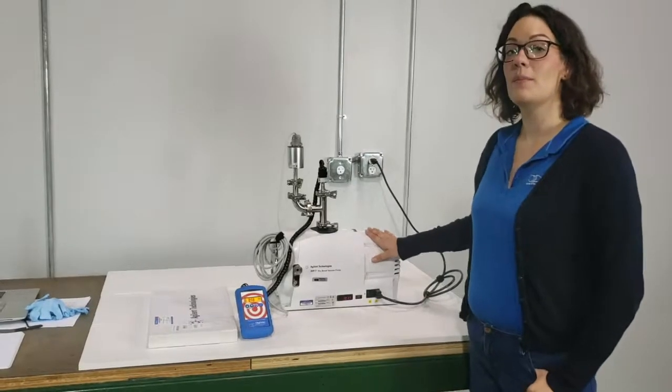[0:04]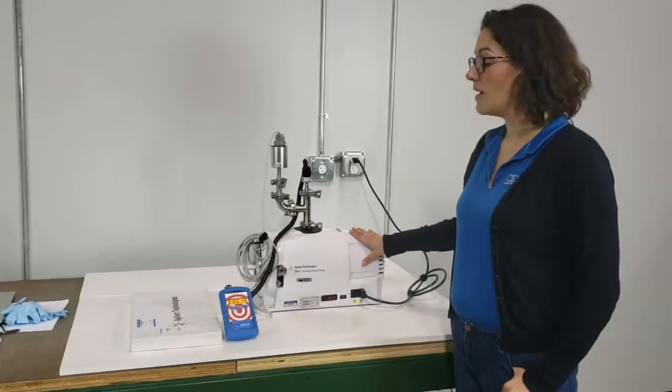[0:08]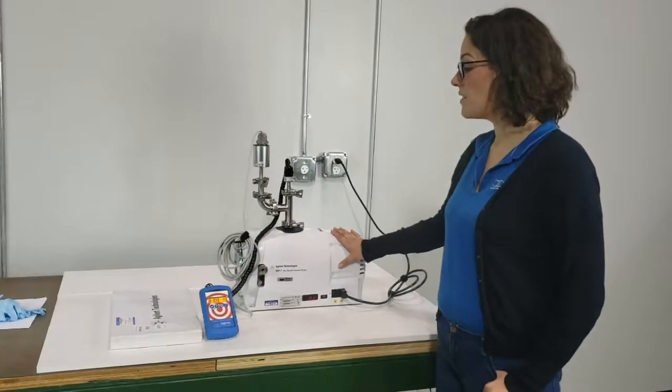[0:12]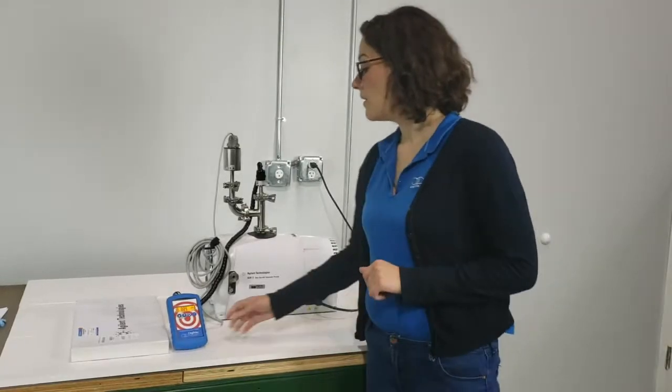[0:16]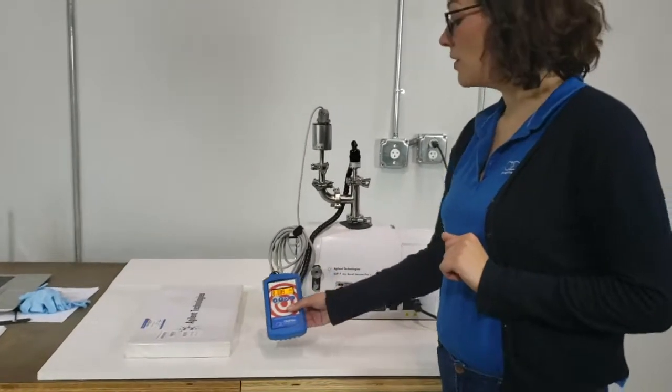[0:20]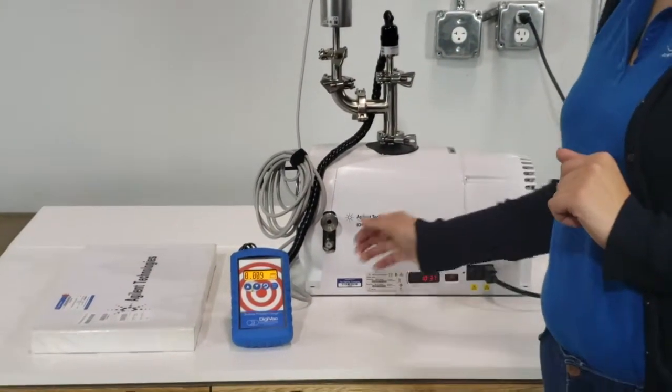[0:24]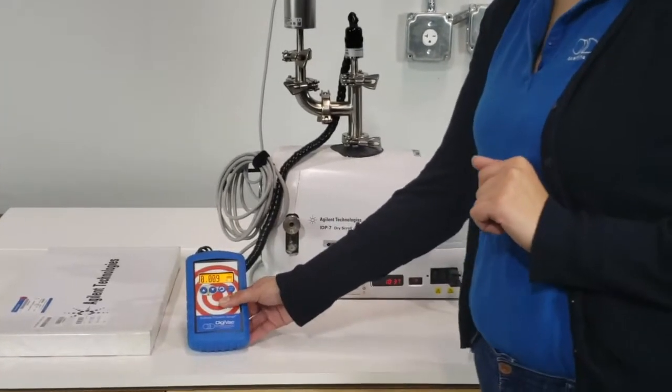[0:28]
I'm the lead calibration tech at the DigiVac company, and today I'm here to demonstrate how to replace the tip seal in the Agilent IDP-7 dry scroll vacuum pump. As you can see, we have our DigiVac bullseye precision gauge hooked up to the pump, which has been running for approximately 10 minutes, and we've achieved a base pressure so far of 9 millitorr, which is very good.
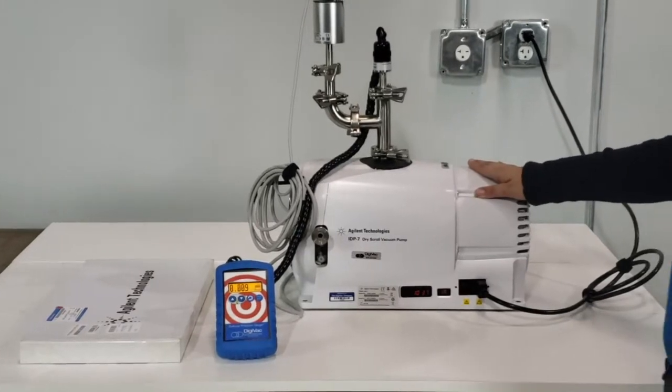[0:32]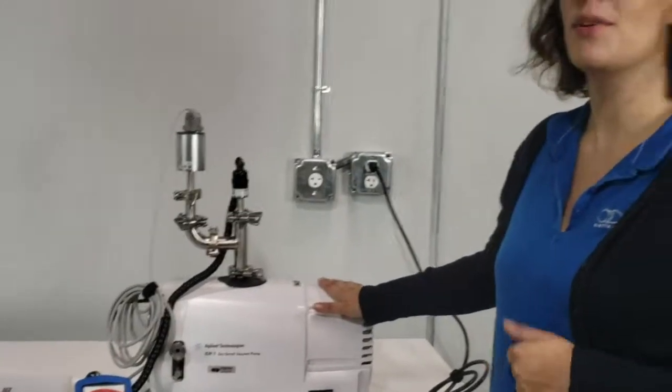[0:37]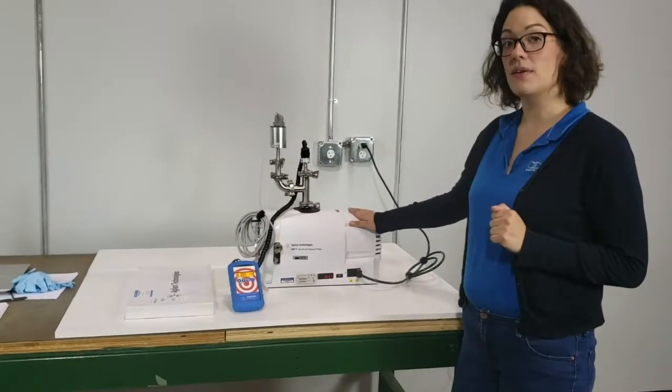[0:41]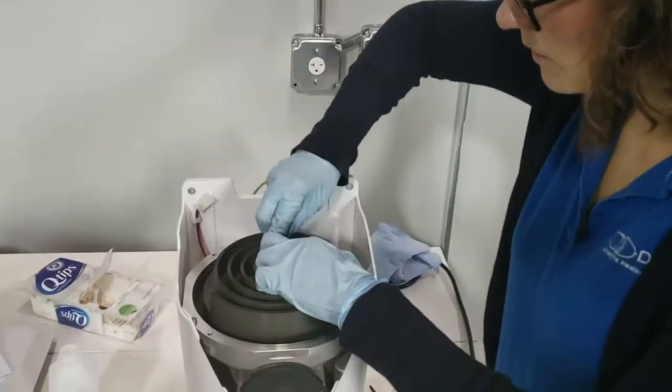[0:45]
This pump is DigiVac property, which we use for testing in our facility. It does not necessarily need its tip seal changed, but we like to demonstrate for your benefit. We recommend this standard maintenance approximately once every 2 years for consistent use.
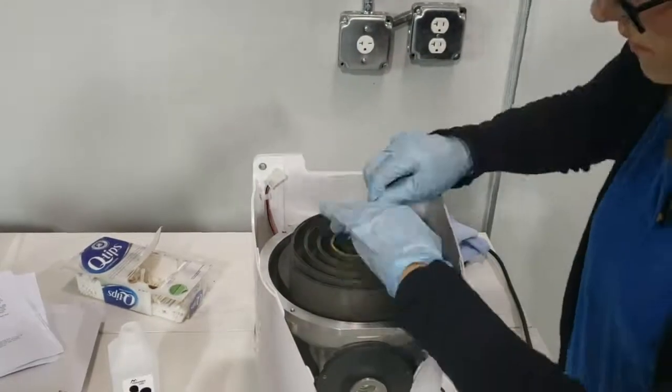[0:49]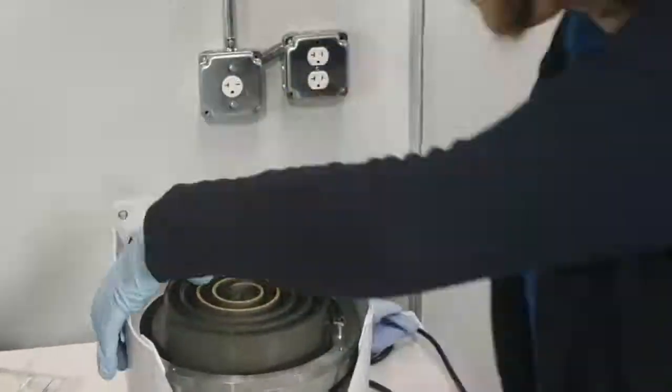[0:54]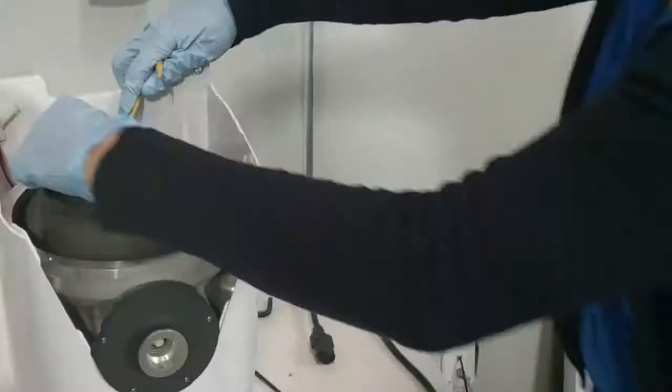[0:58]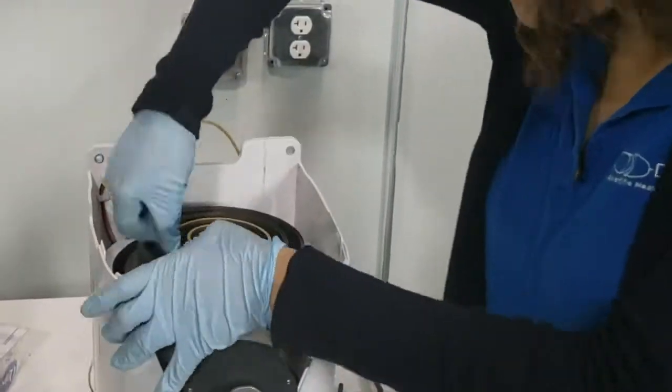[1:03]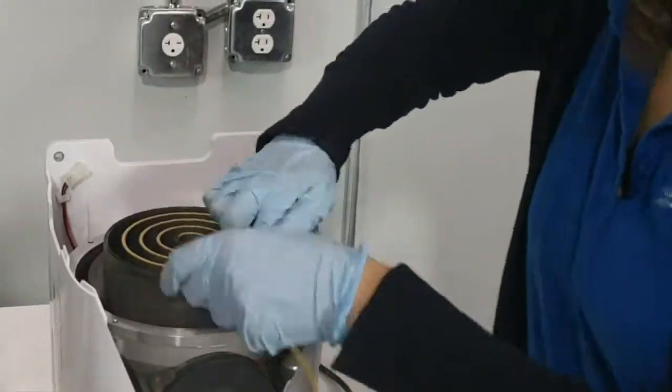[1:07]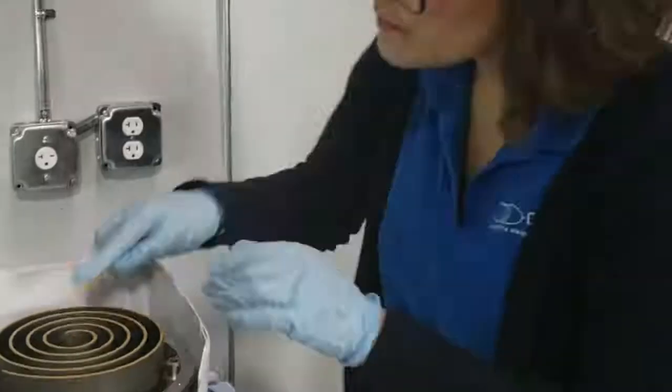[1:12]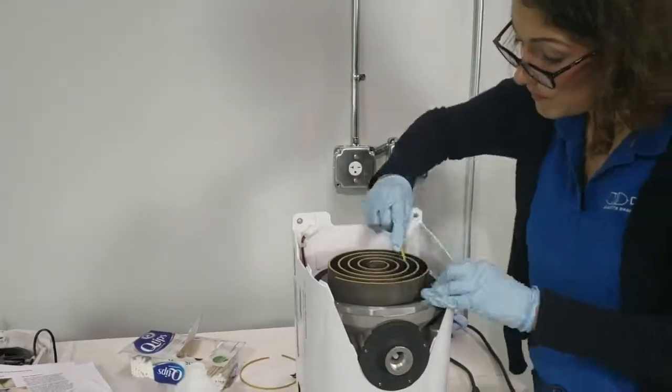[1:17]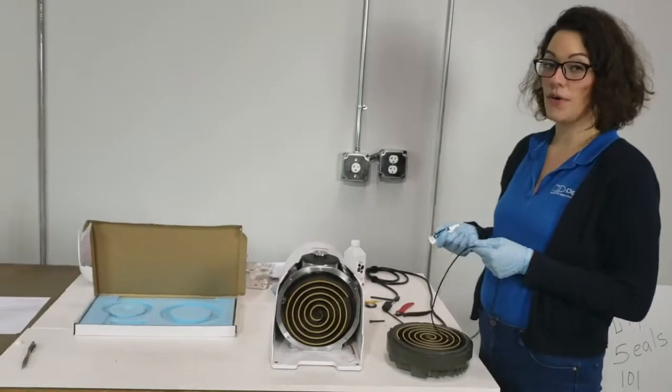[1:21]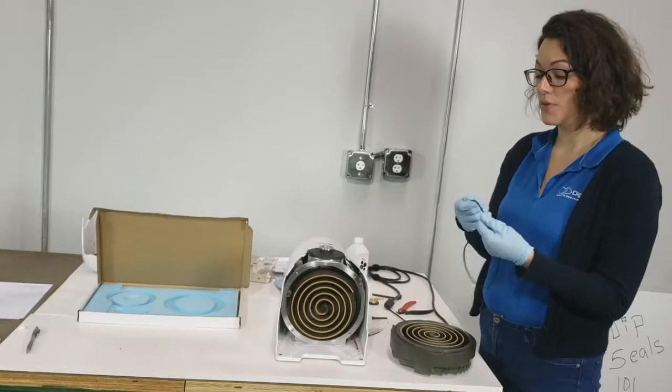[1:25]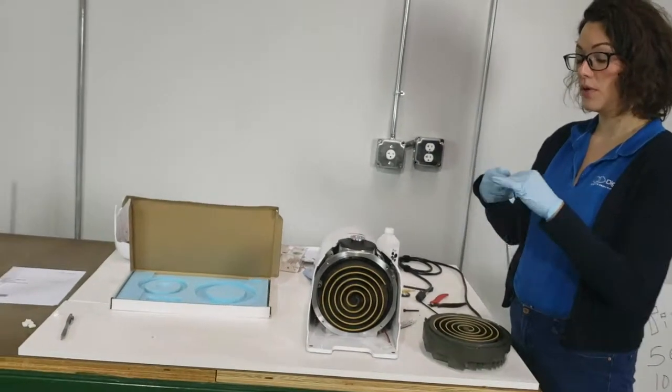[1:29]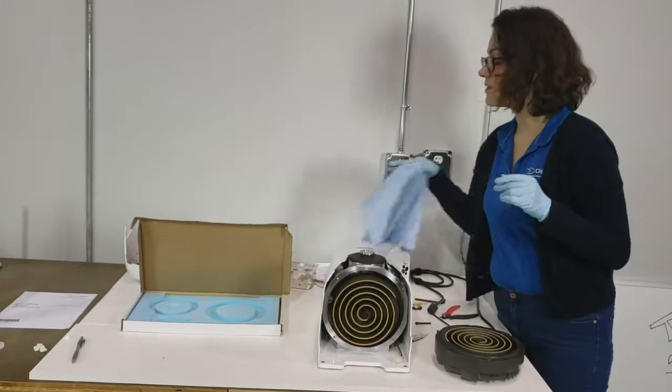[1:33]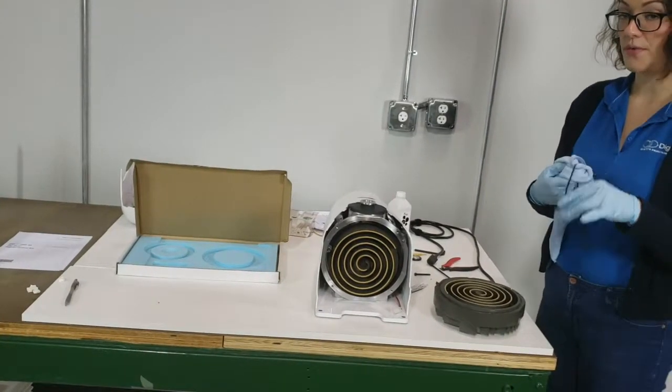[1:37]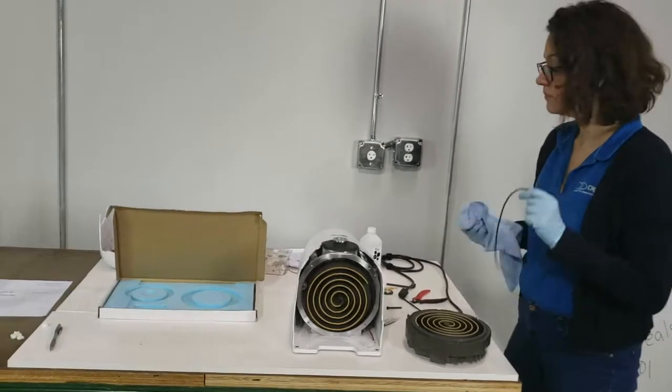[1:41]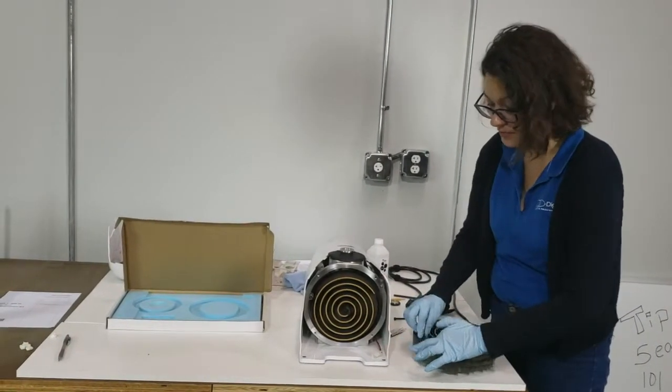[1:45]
So we'll grease the O-ring very slightly with the provided grease. Just work a bit between your fingers, pull it along the length of the O-ring, and then go over the surface with a lint-free cloth just to leave the surface slightly shiny. Then we can lay the O-ring in its groove.
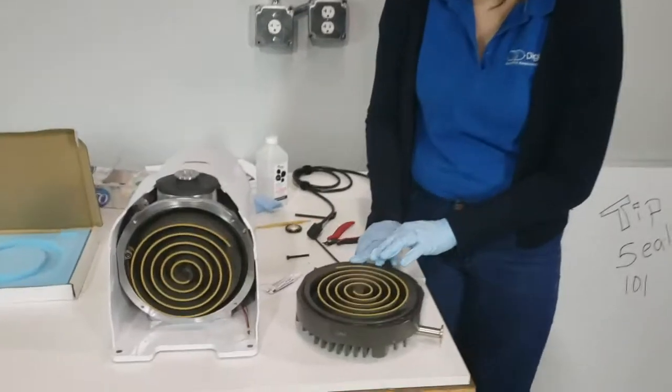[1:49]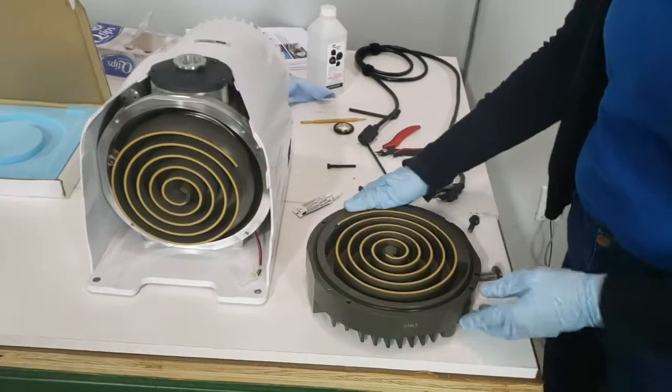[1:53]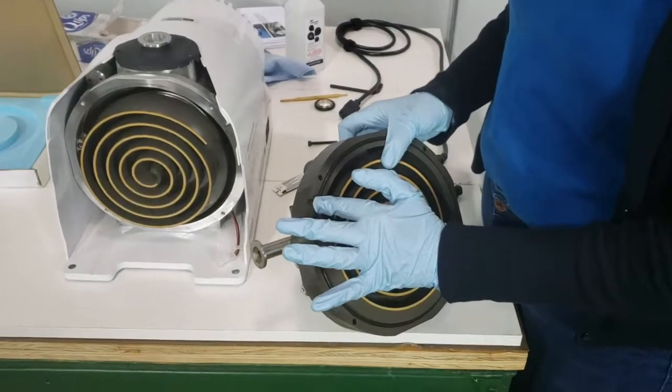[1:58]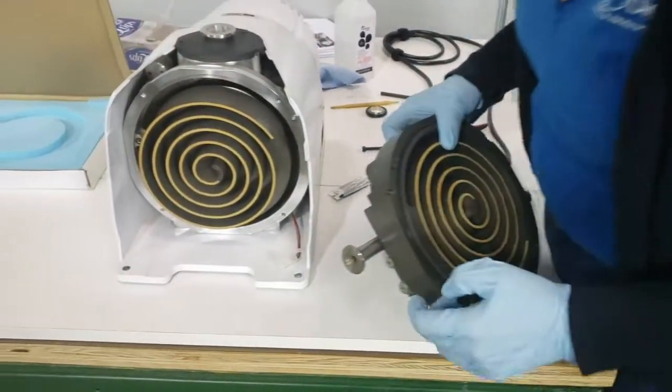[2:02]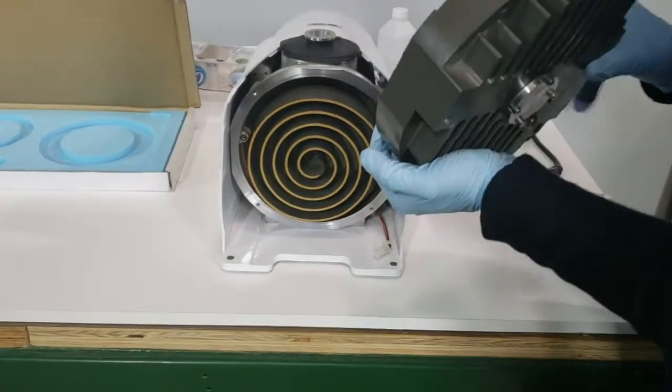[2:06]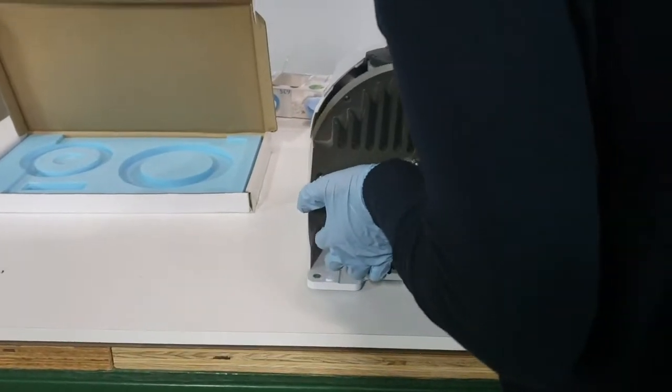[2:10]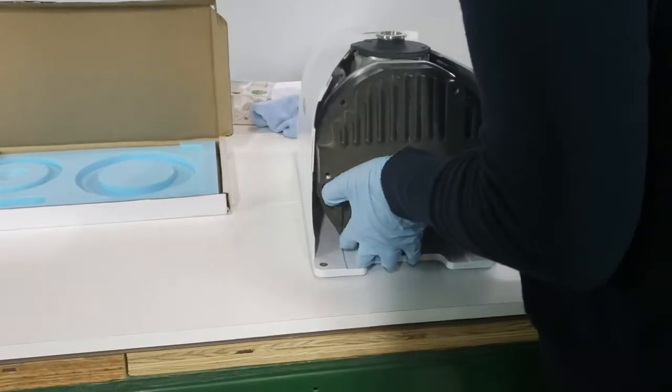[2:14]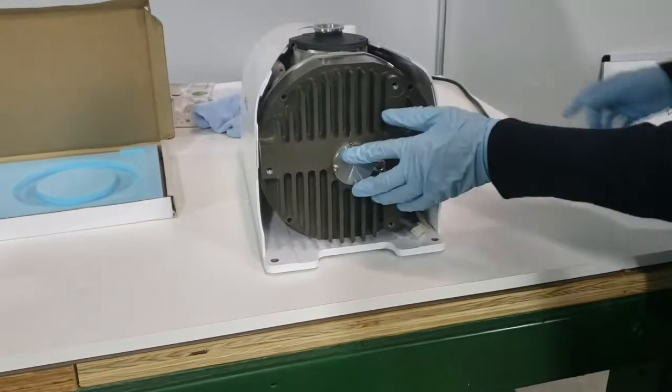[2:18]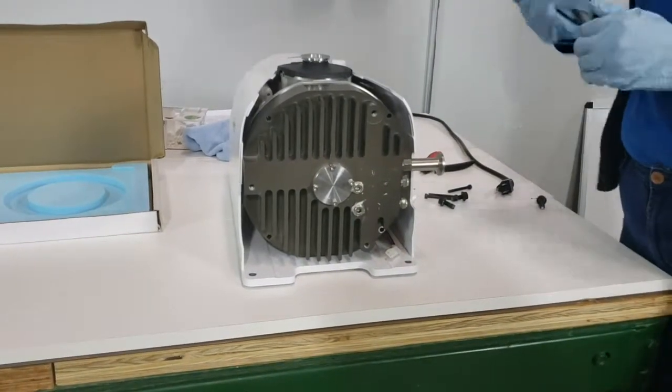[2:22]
And keeping in mind our orientation, we'll see this slot on the outer scroll will correspond to this pin on the inner scroll, so we know the alignment. And then we will replace our screws with our 4mm Allen wrench.
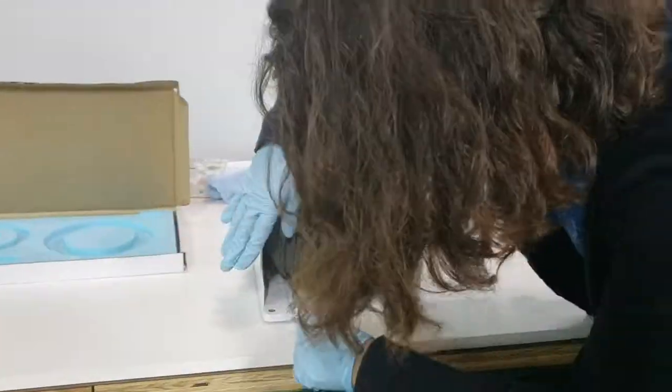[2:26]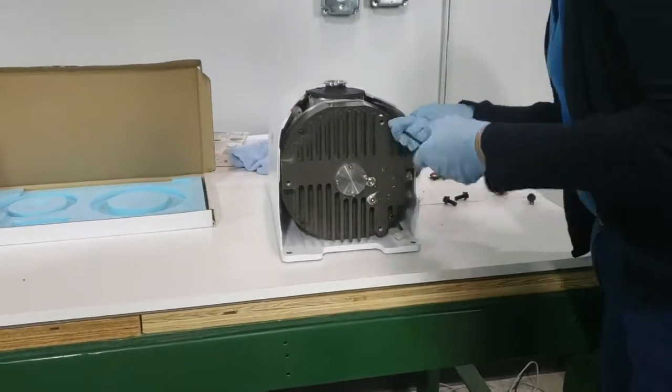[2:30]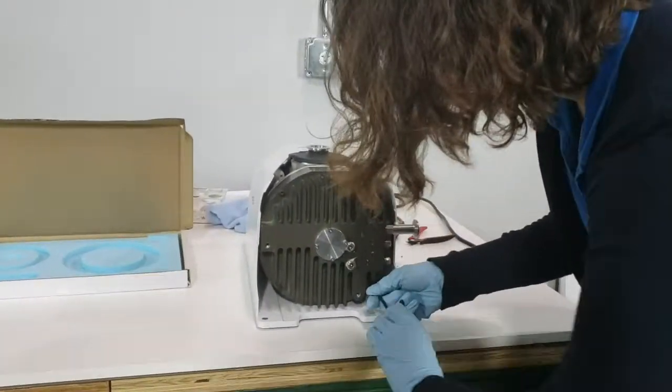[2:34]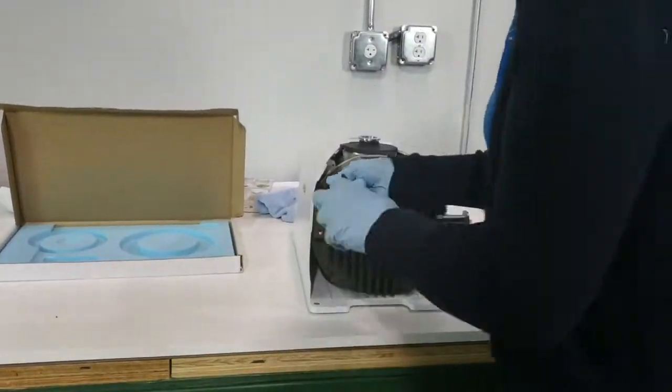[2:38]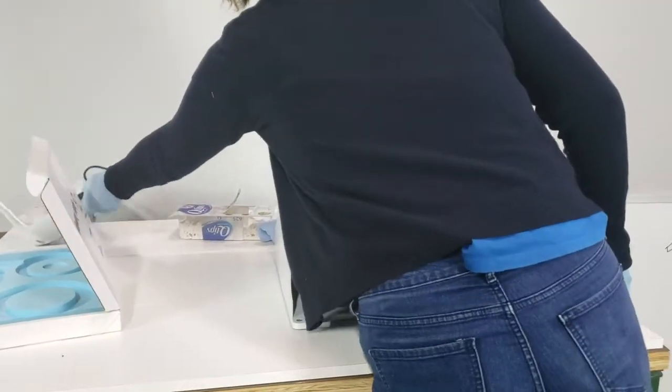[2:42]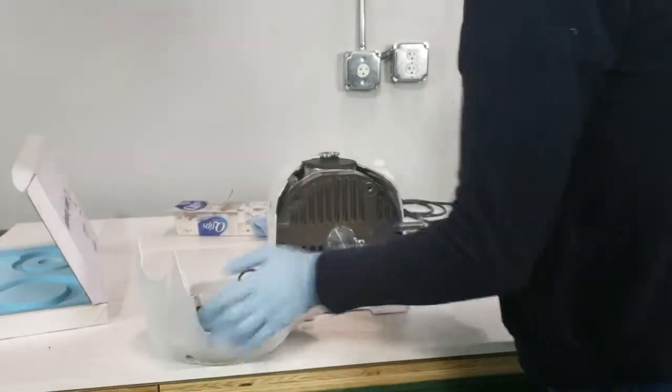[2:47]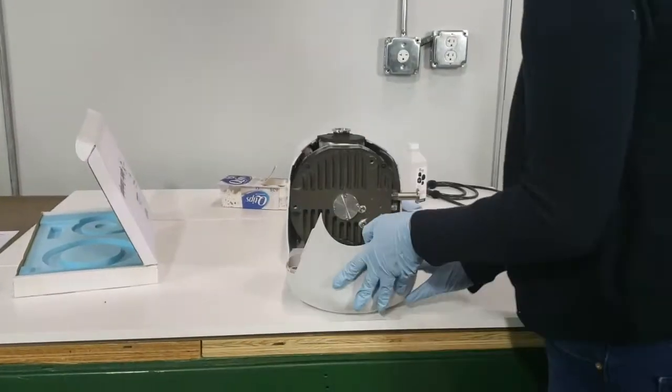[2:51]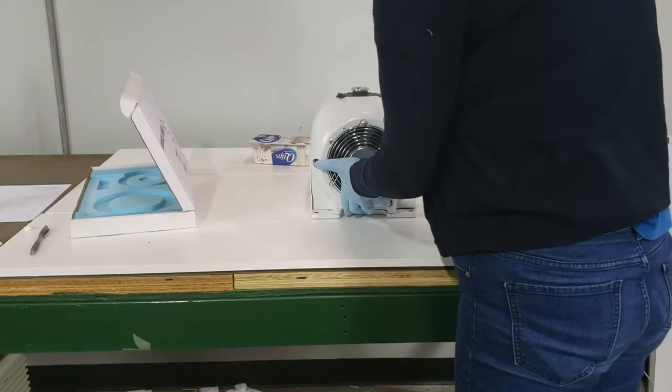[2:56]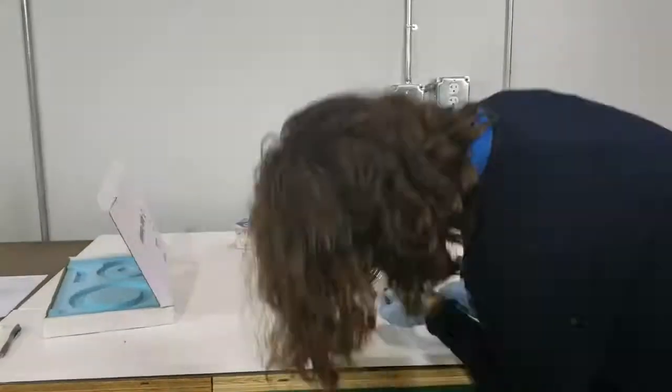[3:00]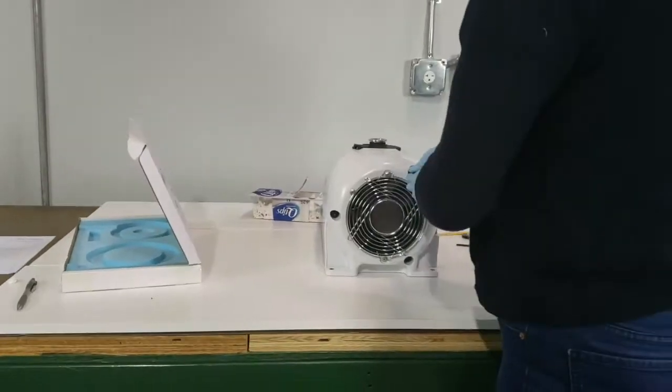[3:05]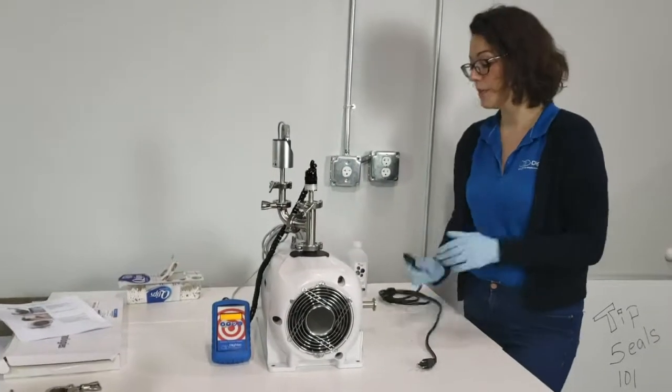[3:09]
Then we'll replace the cowling and fan. Remembering to plug this connector back in. And using our 8mm Allen wrench to replace the bolts. It's time to start up the pump and take a look at how it operates.
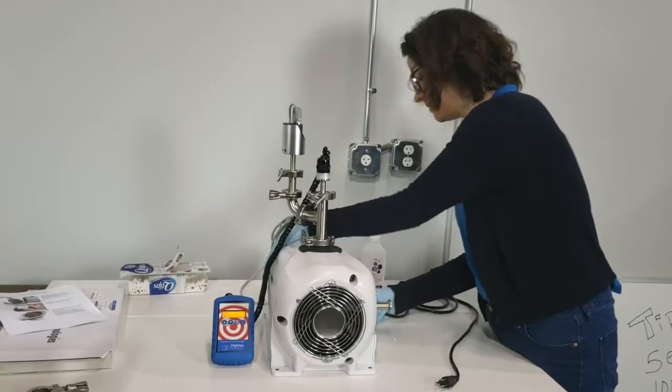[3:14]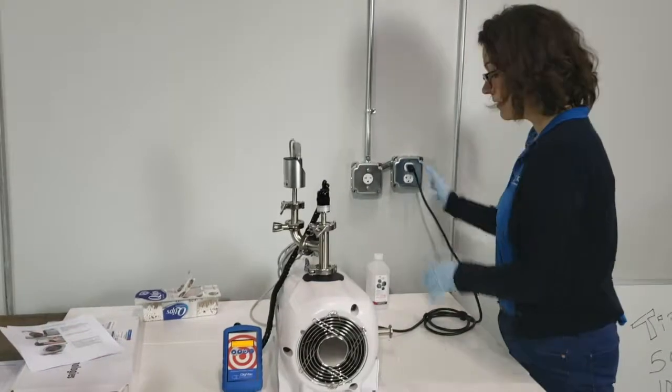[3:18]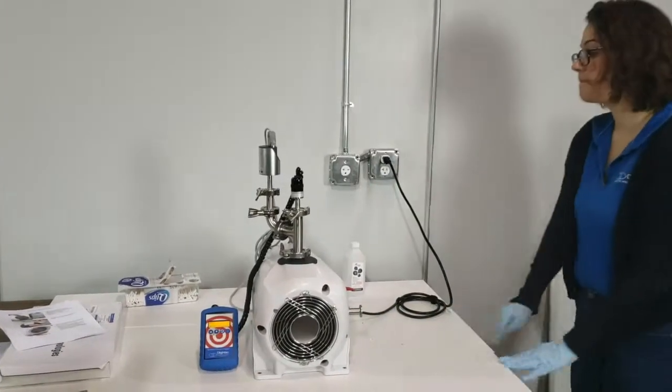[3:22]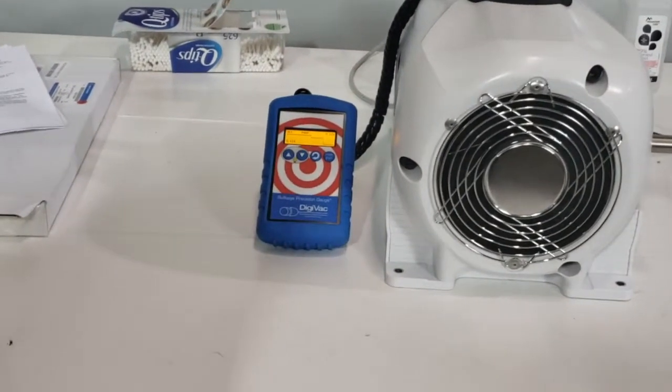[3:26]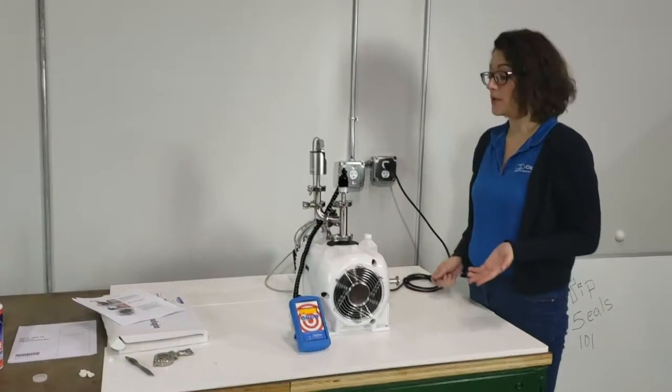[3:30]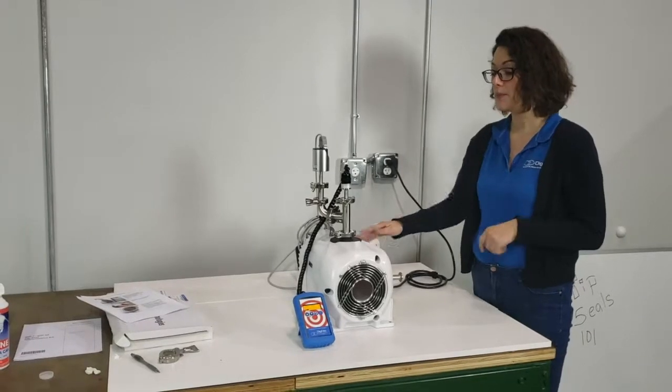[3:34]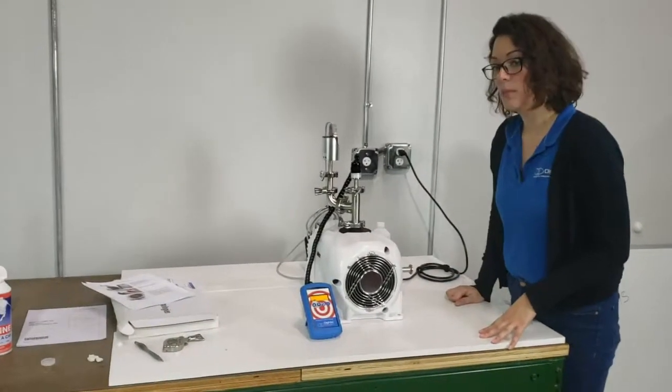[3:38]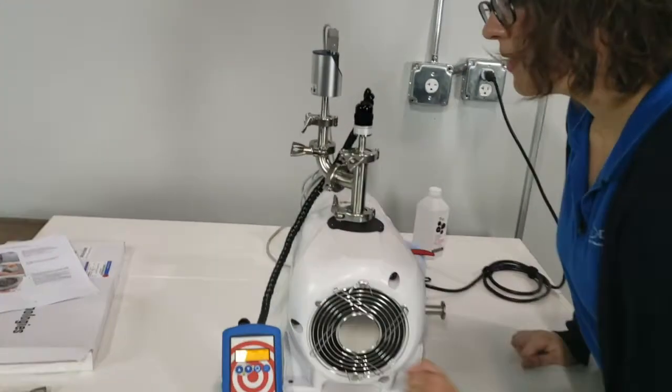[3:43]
So we've successfully replaced our tip seal in our IDP-7 dry scroll vacuum pump, and at this point, we've turned it on to test it. We've been running our pump for approximately 5 minutes. We've reached a pressure so far of 46 millitorr, which is quite good.
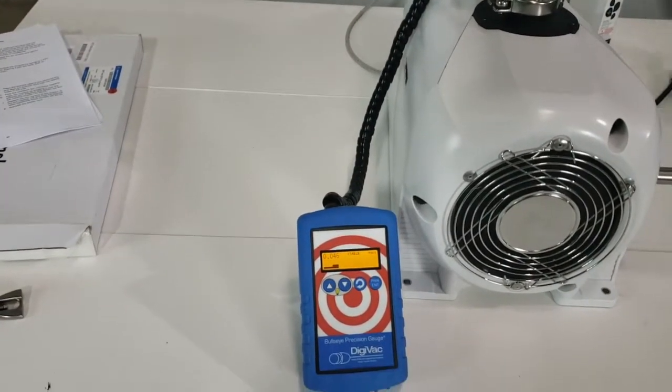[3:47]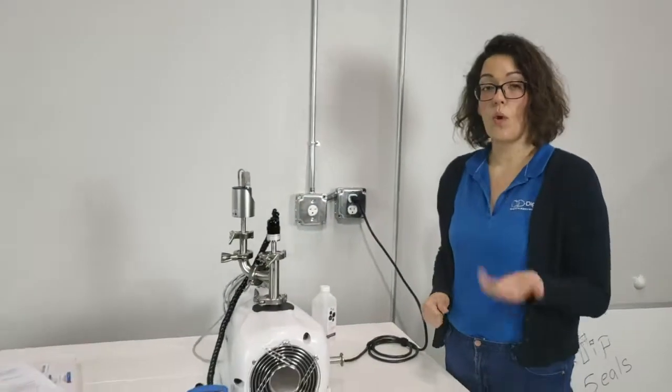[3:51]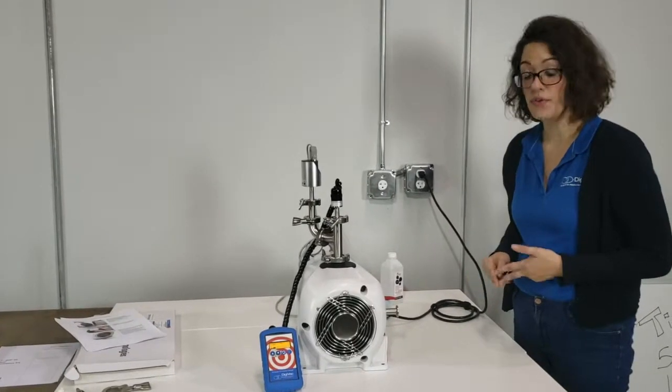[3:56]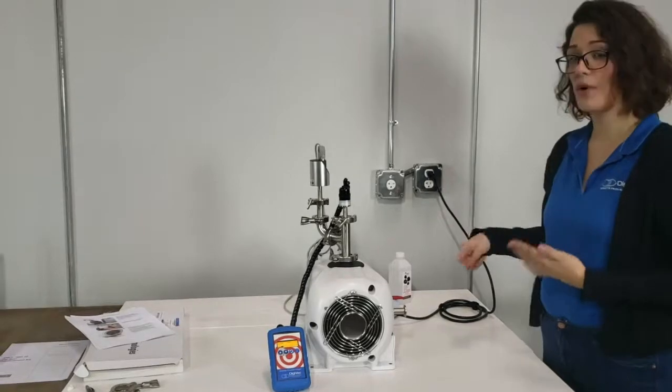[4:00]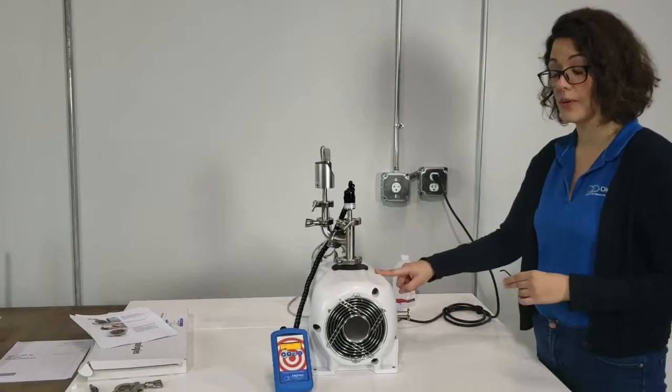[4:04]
Now, in the process of opening up and cleaning your individual scrolls, water, residual moisture, and even the solvent that you've used to clean the scrolls will be outgassing. So, we like to give our pump a bit of time to overcome that and also to allow the new seal to do its thing.
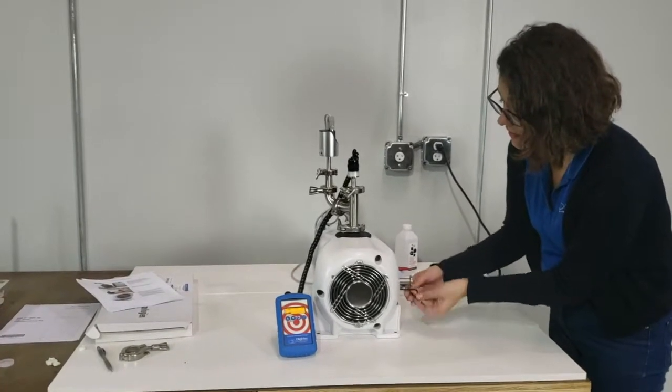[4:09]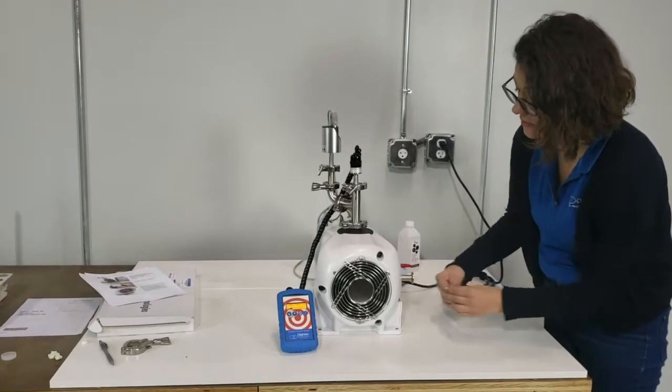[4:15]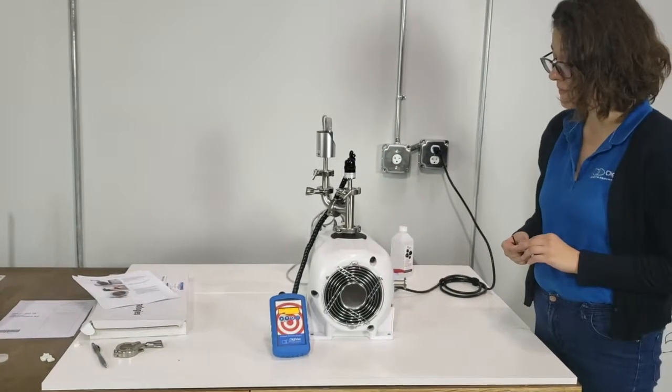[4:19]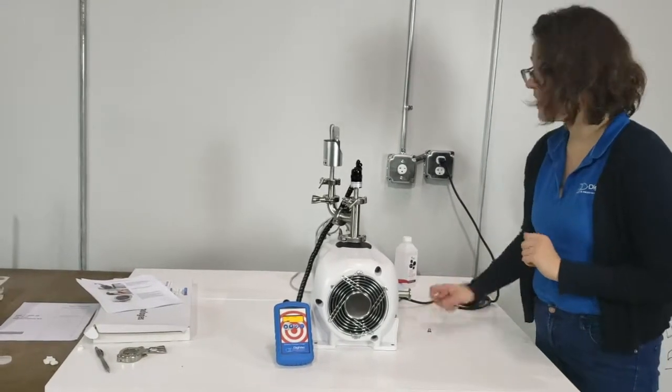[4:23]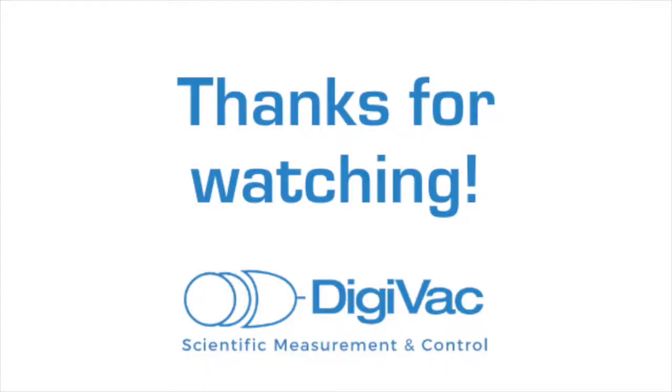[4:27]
So for approximately 20 minutes, you can unscrew gas ballast 1 to allow a little more airflow into the pump to help that solvent and water vapor outgas. After about 20 minutes, you can reseat the gas ballast and allow the pump to run overnight. And then your base pressure will be good as new.